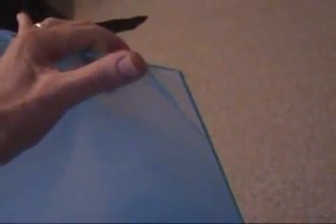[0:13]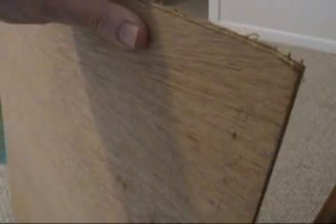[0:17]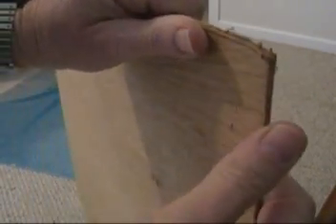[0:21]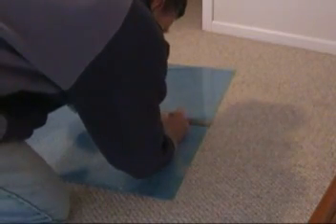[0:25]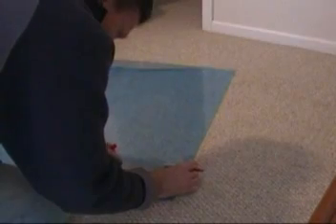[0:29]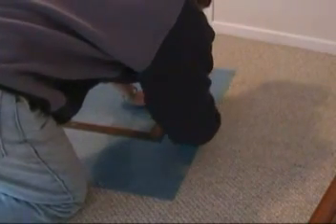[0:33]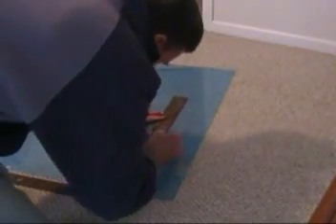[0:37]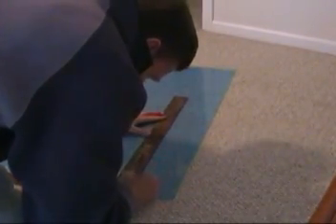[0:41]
had it like glass. An alternative would be to just take some thin plywood like this and cut it, but I thought it would be sort of cooler to have a clear plate. So I measured 12 centimeters over, which is the same size as the fan, and I drew a line with a Sharpie on the plastic. The stuff is not actually blue, that's a blue protective sheet on it.
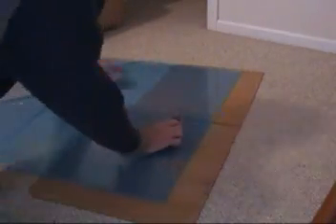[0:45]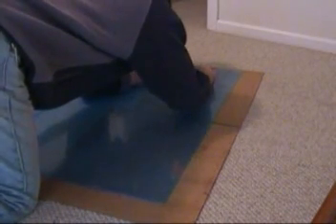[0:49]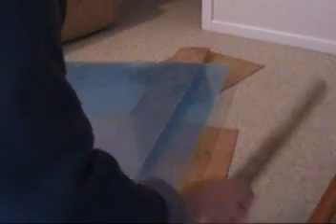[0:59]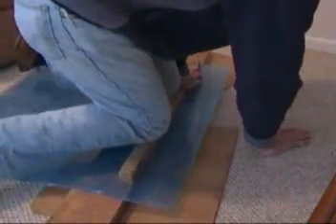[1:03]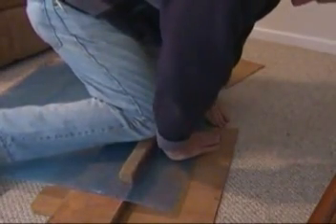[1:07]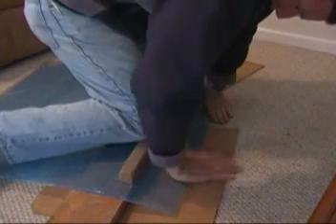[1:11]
So I drew a line with a Sharpie, and then you're supposed to go over it with this knife that you get when you buy the plastic. And like I say, just use wood if that's all you got. You score it a whole bunch of times, which I didn't show, and then you supposedly can snap it along that line. Now, the longer the line is, the harder it is, and I obviously don't have the right equipment here, but I did manage to snap it along most of the line that I drew.
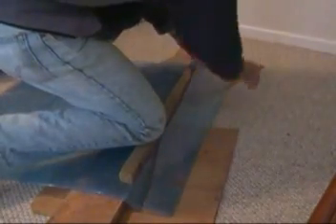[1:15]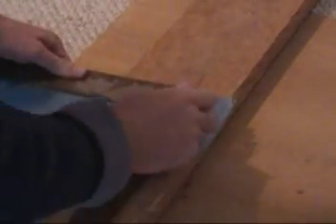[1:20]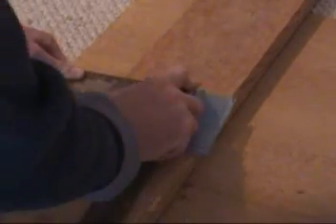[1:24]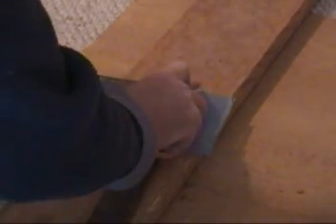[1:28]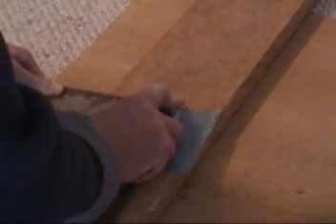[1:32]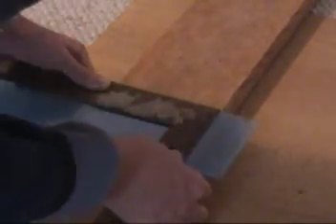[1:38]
And I was able to get a 12 centimeter piece. The end wasn't good, so I had to cut that off. So here I'm scoring it. These little pieces actually are much easier to work with. You score it maybe 10 times and then just snap it off, and usually these little ones break pretty easily.
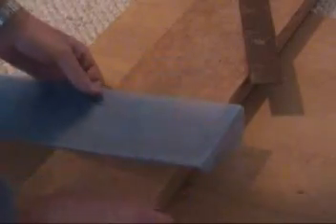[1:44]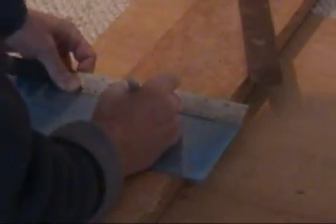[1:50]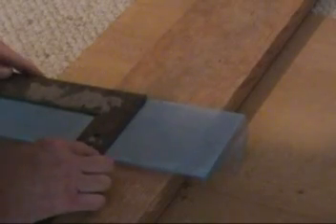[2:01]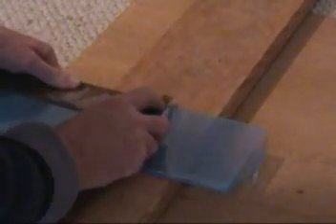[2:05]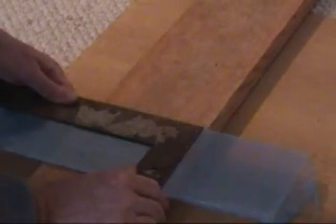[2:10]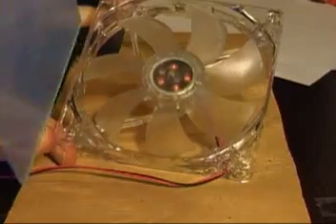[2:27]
I'm making more than one of these stir plates. I made quite a few of these 12 centimeter square little plastic things, and we'll score another one here. You got to go over it quite a few times in order for it to work, but I cut that out and then pop it. It's supposed to break sort of like glass, except that I don't have the right equipment. And then you can peel that plastic off once you get done with your project.
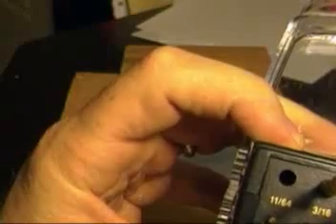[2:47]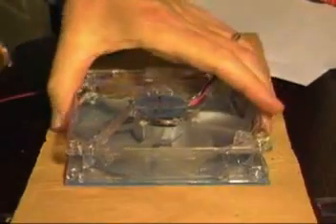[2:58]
So here it is fitting onto the fan. What I'm going to do now is tape it on. I'm not going to show you all the tape, but I'm basically taping it on four sides so that it won't move when I'm drilling it, because I want to just drill through the existing fan holes. And I use an 11/64 bit to drill through. So I get all those taped on there. I put it on a piece of plywood so that I don't mess up my desk.
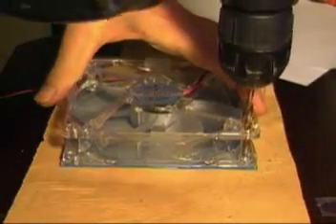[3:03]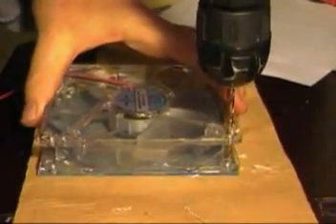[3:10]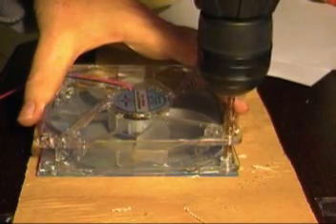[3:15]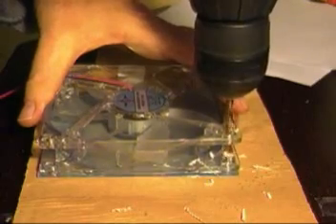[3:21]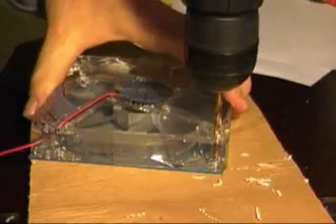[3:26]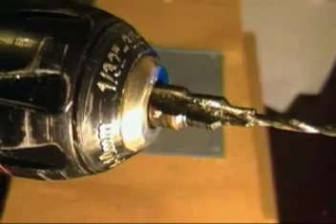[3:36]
And I just drill through the existing holes and pop through. I'm not going to show you every hole here, but you get the idea, all four corners. I wanted to mention that you got to sort of take it easy. You don't want to crack this stuff, because that took a long time to get that square cut. So you just got to be really gentle with this on the corners so that it doesn't crack the plastic.
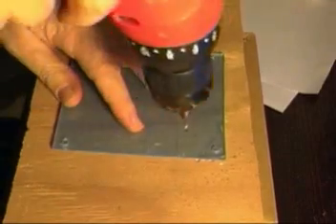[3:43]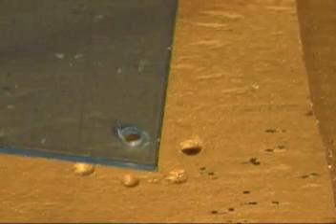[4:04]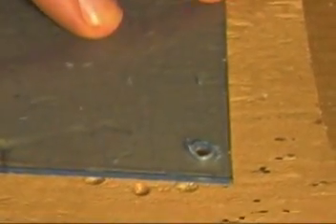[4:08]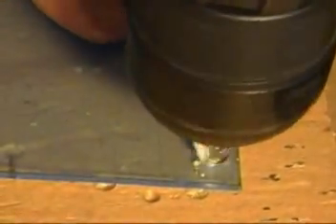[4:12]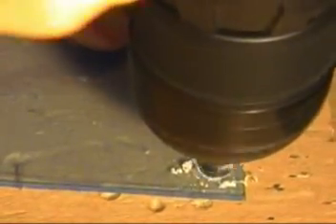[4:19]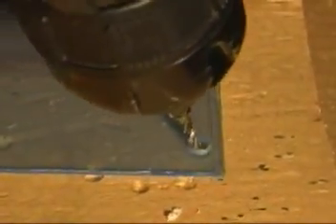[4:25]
So now that the holes are drilled, I'll remove the tape, and I want to use a countersinking bit here so that the screws will be flush and not sticking above. So I've got a countersinking bit on there, and I'm pushing in gently so that I don't crack the plastic. This shows you how the screw sits in there with its head just below the surface, so that you don't have a problem when you slide something on the plate. Here I'm doing another corner, and you get the idea. I'll do it on all four corners, and then I'm ready to assemble the unit.
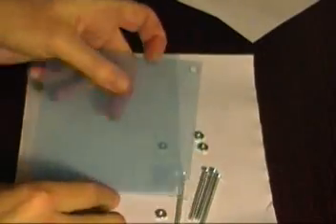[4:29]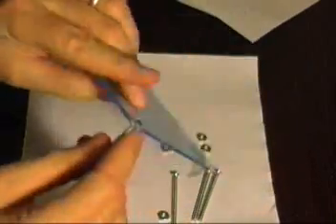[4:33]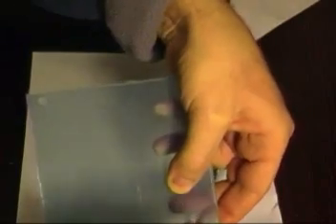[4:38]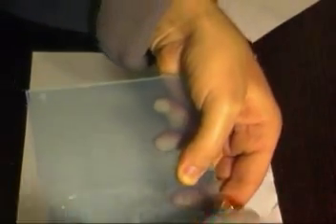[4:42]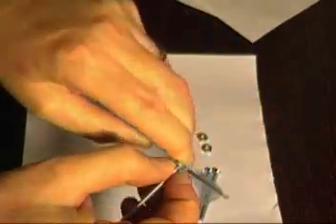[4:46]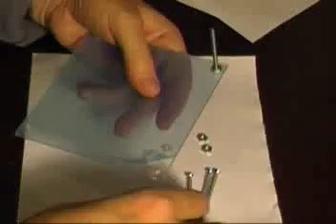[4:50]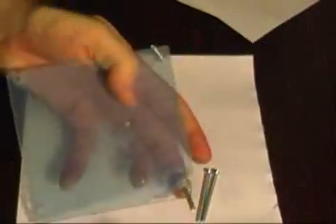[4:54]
So putting the thing together, I basically got these screws, bolts actually, and little nuts. And just push them through there and spin the nuts on there. I didn't bother to tighten them any more than finger tight. It just seemed like that would be fine to do. Put them all in there.
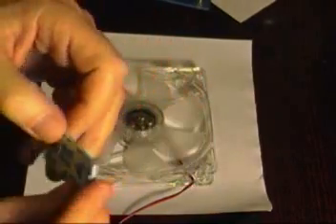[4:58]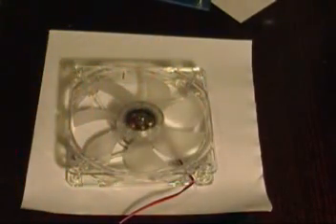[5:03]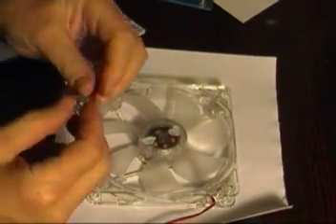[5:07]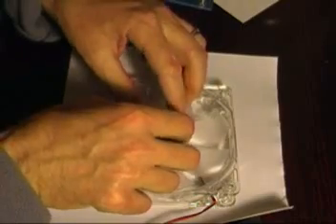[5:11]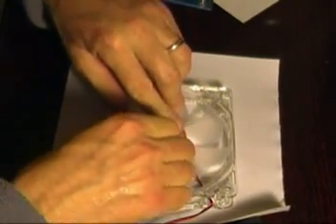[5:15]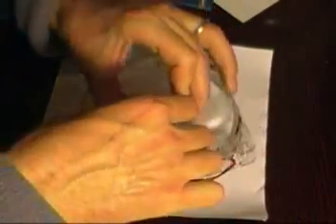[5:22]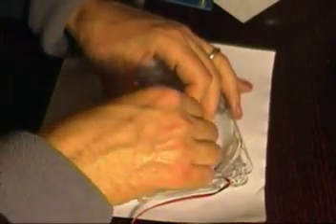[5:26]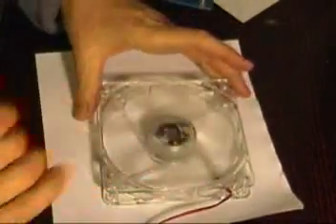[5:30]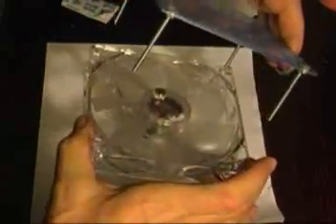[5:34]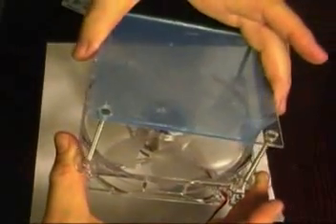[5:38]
And then I took this temporary gummy stuff that you're supposed to stick things on the wall with, and I used that to mount the magnets. Now, the reason I did that instead of glue was because I didn't know exactly how far apart to put them. So I wanted to be able to experiment, and so I used this gummy stuff, I guess it's called Bostik Blu-Tack, or you could find an equivalent. But it's just enough to get the magnets stuck onto the fan so that I can change the distance between them. I ended up taking it apart several times to adjust the magnets and to remove that blue film, which I didn't want on there in the first place.
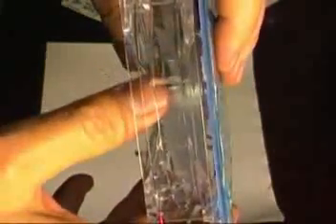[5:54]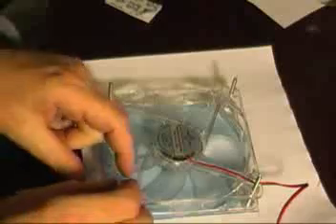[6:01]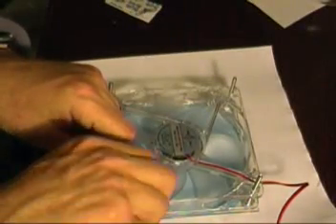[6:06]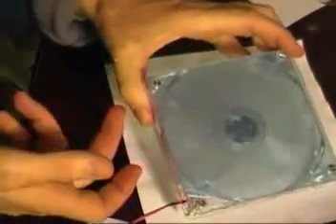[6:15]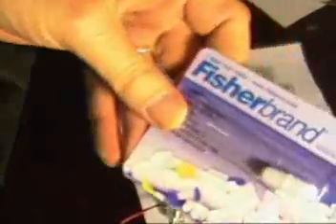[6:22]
I forgot about it. So here you see there's a spacing between the top plate, the top table, and the magnets, so they don't rub. That's what I was trying to show there. Now I'm putting this upside down, and I'm putting the nuts on the bottom. The bolts are actually just going to be little legs to stand on. As you see here, it's just standing up off the table a little bit. The air is going to be pulled in under the table and then blown out down below.
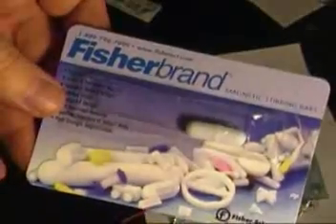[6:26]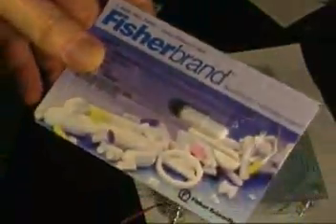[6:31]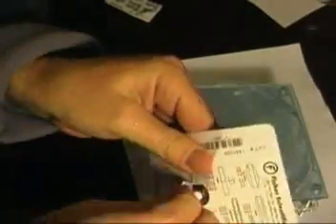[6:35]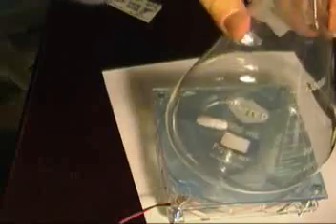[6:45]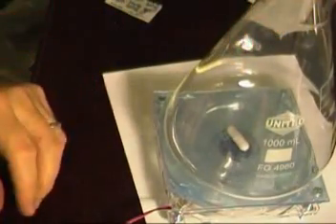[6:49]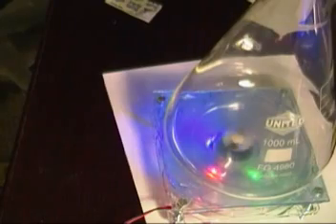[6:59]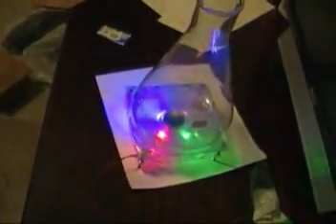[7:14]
Here's the stir stick, magnetic stirring bar. It's an inch, about $5 on eBay. And I'm putting it into the flask here and setting the flask onto the stir plate, and you can see the magnet jump into the center there. And now I'm going to plug it in, and there we have it. It's spinning in the stir plate there, and just for effect, I'll zoom in here and turn off the lights. The fan is sort of goofy with those little LEDs, but it's sort of fun.
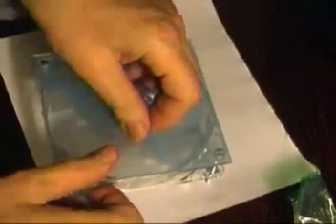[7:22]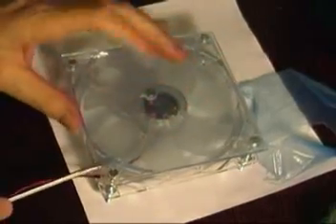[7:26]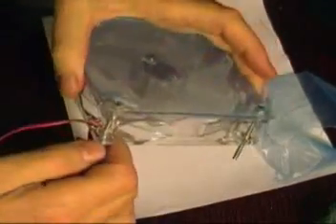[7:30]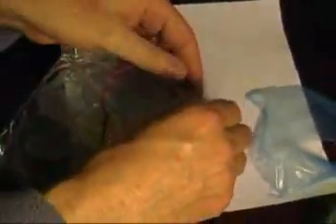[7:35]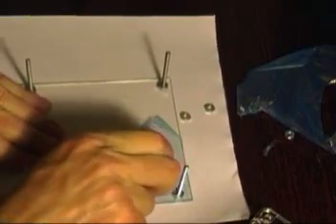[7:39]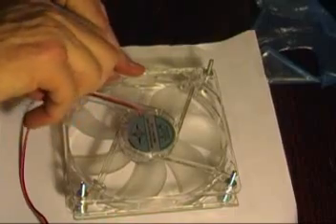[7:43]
The blue film had to come off, so I could take the top one off easy enough, but when I tried to take it off without taking it apart, that didn't work. So I ended up taking the whole thing apart to remove the blue film, but it's not too much trouble to take apart. And here I put it back together again, and now this is the way it looks in its final state.
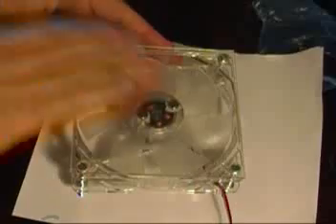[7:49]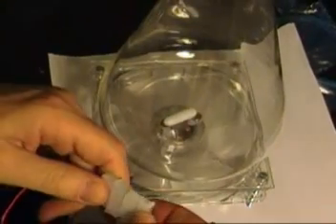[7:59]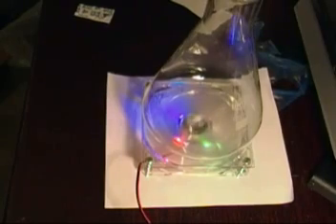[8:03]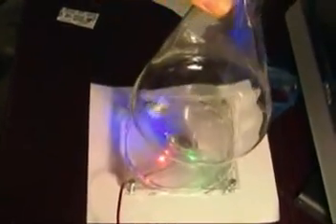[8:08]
You can see the magnets, they are 1.4 centimeters apart. I found that was a good distance, and that way the magnet doesn't jump around too much and pop off, because if they're the wrong distance, the magnet will pop off. Yeah, so there's the fan, and I'll unplug it here, and you can see that those magnets are 1.4 centimeters apart.